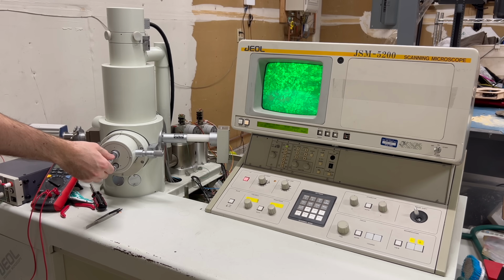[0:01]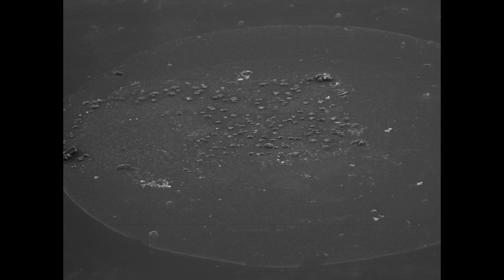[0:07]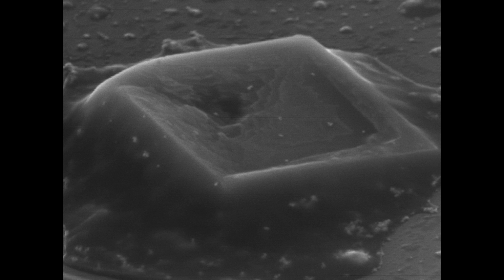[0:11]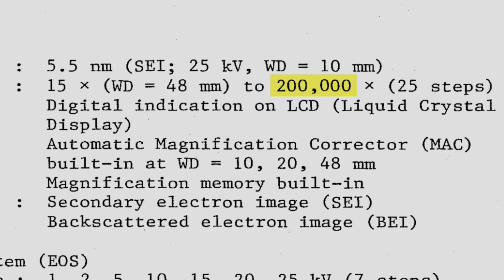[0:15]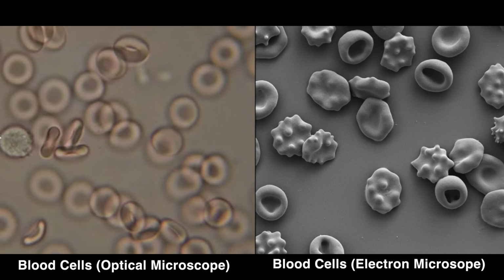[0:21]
In my previous video, I repaired an old electron microscope and produced some really cool images. However, if we want to justify having a SEM, then it really needs to outperform an optical microscope. When this machine was new, it could magnify up to 200,000 times and resolve details down to 5 nanometers, about 100 times better than the best optical microscopes.
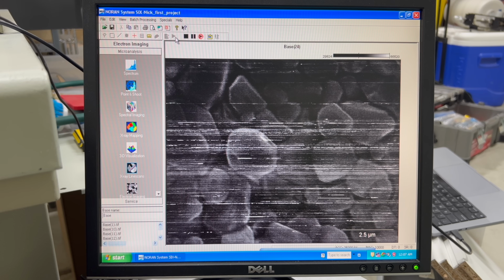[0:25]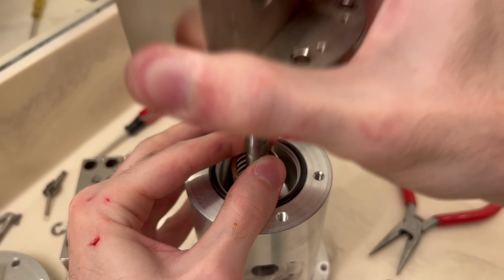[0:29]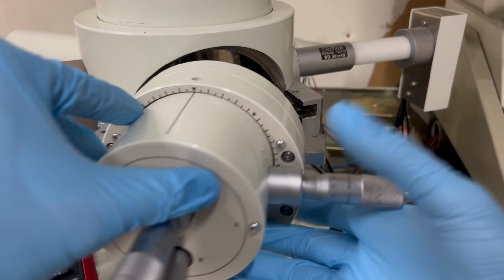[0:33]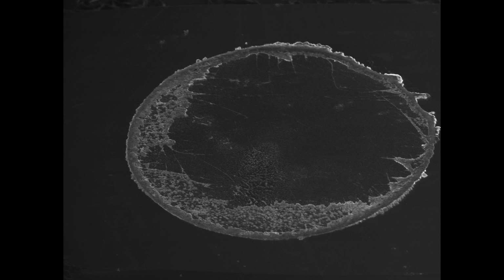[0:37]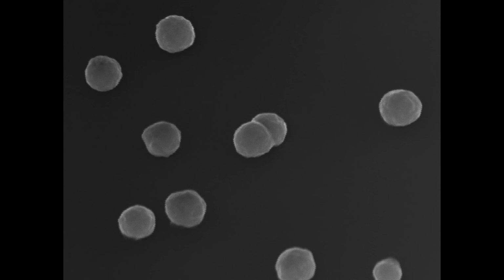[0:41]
However, like any delicate machine, performance degrades without proper maintenance, and this SEM hasn't had a tune-up in over a decade. The first step in that process is having the correct tools for the job. Today, I'll be building the most important tool for the task: a gold nanoparticle resolution test target.
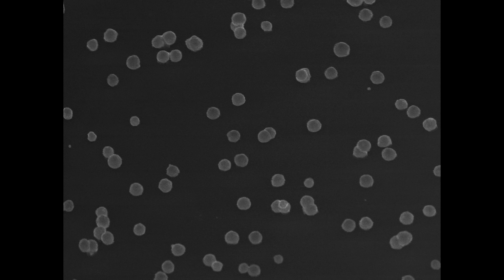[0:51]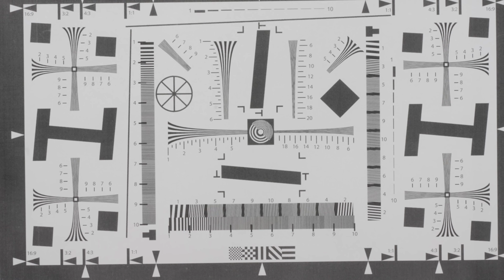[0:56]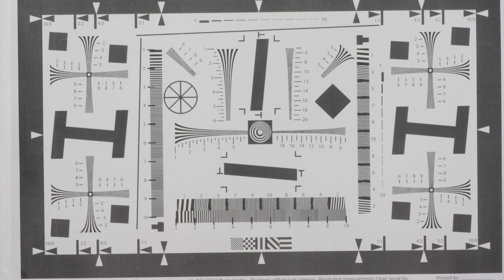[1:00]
Okay, so what is a gold nanoparticle resolution target, and why do we need one for the SEM? Well, simply put, a resolution target is anything you can use to test the maximum resolving power of an imaging system. For cameras, we use something like this.
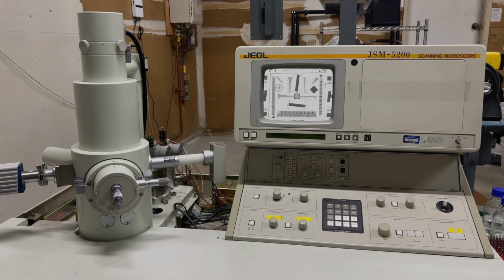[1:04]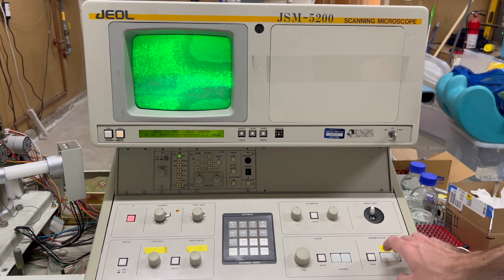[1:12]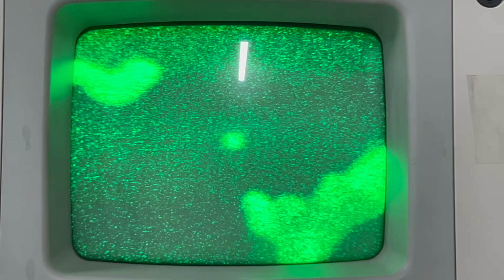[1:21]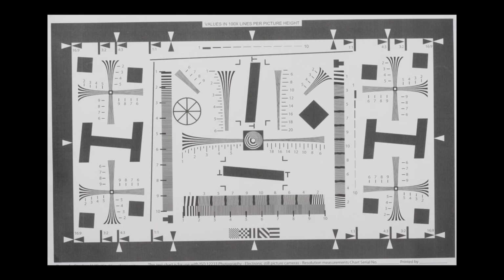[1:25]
What we need is a similar test pattern for the SEM. This will allow us to determine the exact resolution of the microscope to see if it's performing up to its rated specs. It will also allow us to compare its performance before and after any tweaks or repairs. Lastly, it will allow us to calibrate the microscope, but I'll go into a little more detail about that in a moment.
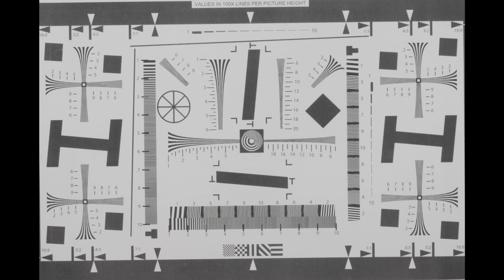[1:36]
Okay, so how do we take this test pattern and shrink it down small enough so that it's useful in an electron microscope? Well, we can't, but not for the reason you might think. The main issue is contrast.
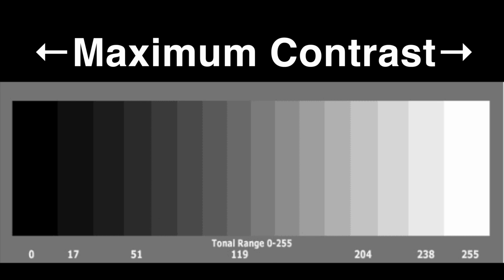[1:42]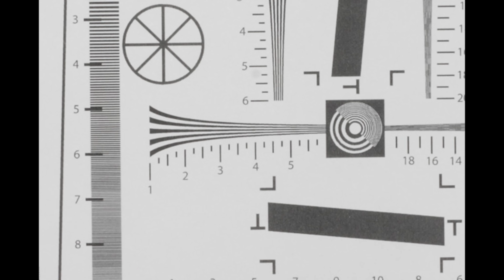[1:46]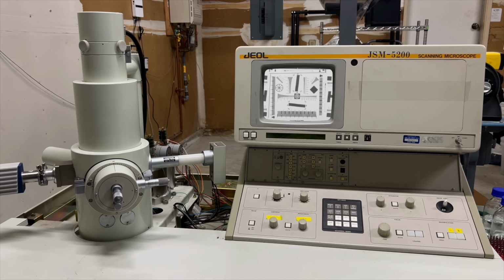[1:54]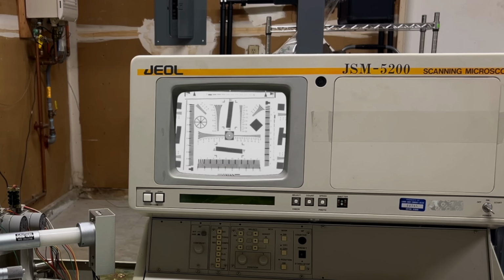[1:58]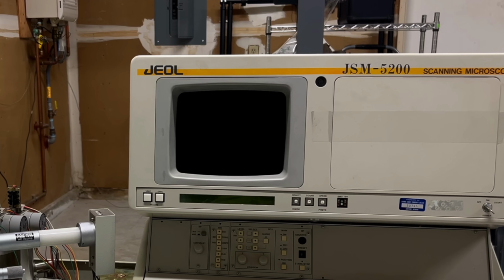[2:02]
You see, we chose black and white bars in our camera test because black and white are the two colors with the highest contrast in an optical system. If we, say, chose gray and a lighter gray, then it would be much harder to see the lines, and this would affect our ability to run the test accurately. The problem is, an electron microscope isn't an optical system. It's not using light to make the image, so black and white bars won't show up at all.
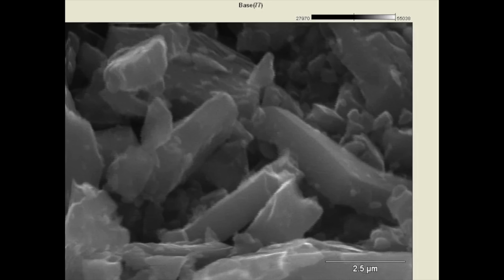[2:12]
In an electron microscope, contrast primarily comes from one of two places. The first is topography. This is a sample of carbon powder. The individual flakes and grains are visible in detail because the number of electrons picked up by the detector depends heavily on surface topography. The second source of contrast is material density.
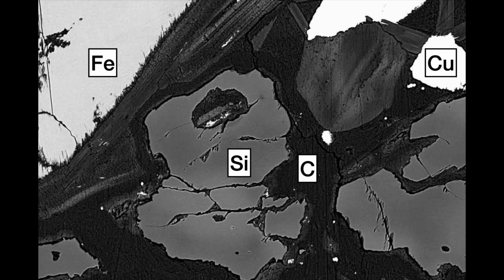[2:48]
Here is a sample of material that has been cut and polished smooth, so there is zero surface topography. This sample actually contains several different materials, and the details visible in this image are due almost entirely to the difference in density between those regions. Generally, regions consisting of small atoms, such as carbon or silicon, appear dark, and regions consisting of larger atoms, like iron or copper, appear brighter.
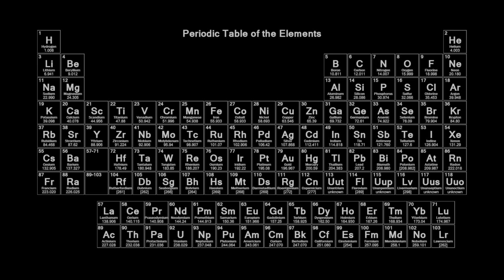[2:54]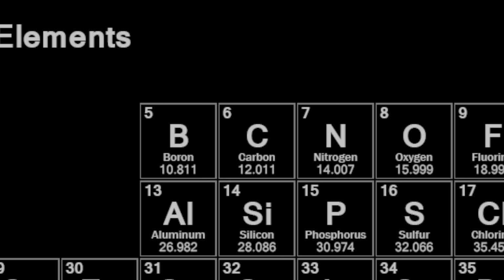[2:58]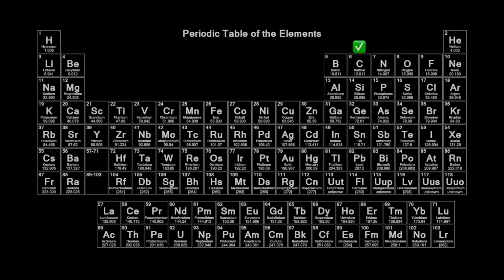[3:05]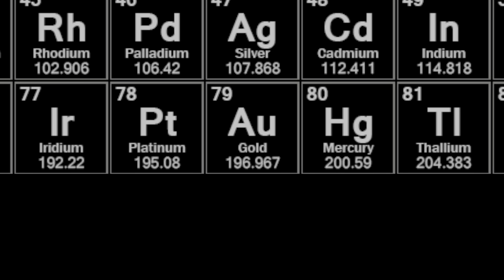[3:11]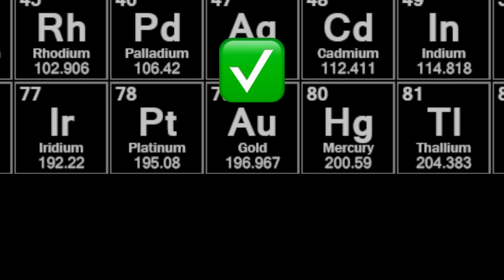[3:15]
This means that if we want to maximize the contrast in our resolution target, we want to choose two materials that are as far away as possible on the periodic table. For this reason, it's common to use carbon, element 6, as the low-density portion of our image. For the high-density element, we need to choose something that isn't radioactive, so everything above lead is out. Gold is non-toxic and extremely chemically stable, so gold is an excellent choice for this task.
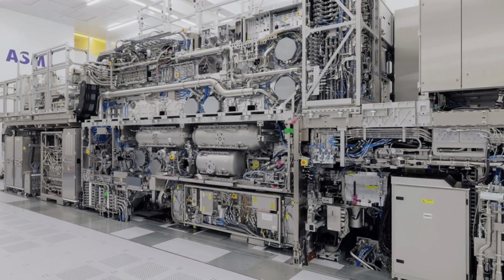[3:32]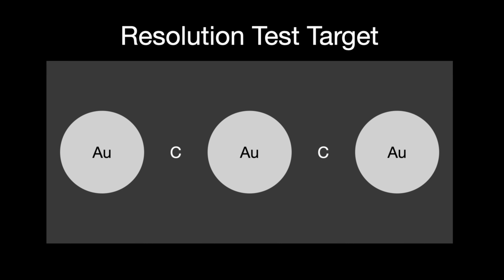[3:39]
Okay, so ideally we want to make our test target with alternating gold and carbon regions. Now, lines would be fine, but remember, we're doing this for a scanning electron microscope, so any features we make have to be tiny. And unfortunately, my multi-million-dollar EUV lithography machine is in the shop right now. Fortunately for us, spheres can actually accomplish the same task.
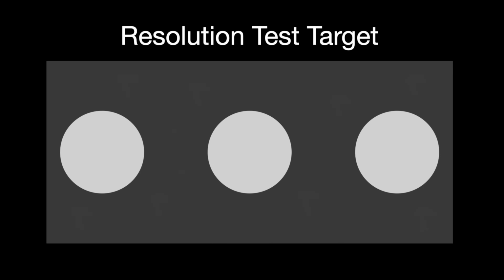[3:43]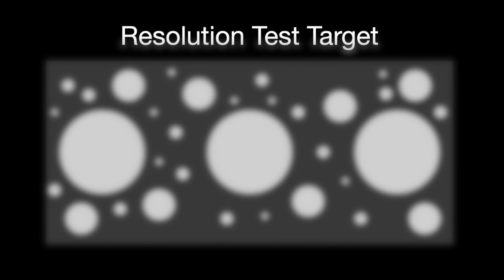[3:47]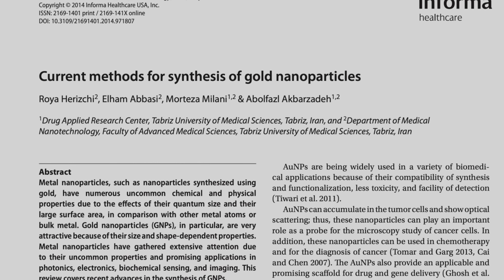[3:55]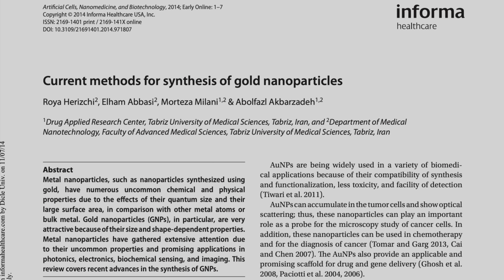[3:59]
Ideally, we'd make spheres in a broad range of sizes. That way, all we need to do is find the smallest spheres that are still in focus, and that gives us a repeatable measurement for the ultimate resolution of our microscope. And conveniently enough, nano-sized gold spheres can actually be made using relatively simple chemistry. The spherical shape also has an added benefit. It allows us to calibrate the microscope.
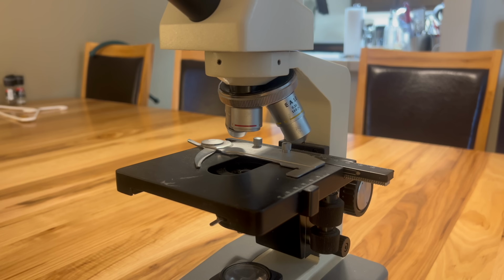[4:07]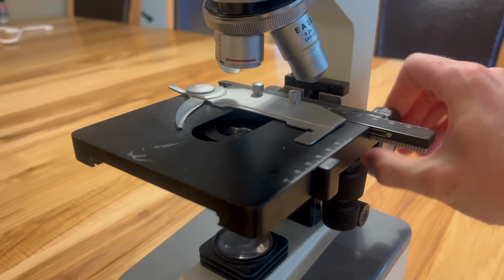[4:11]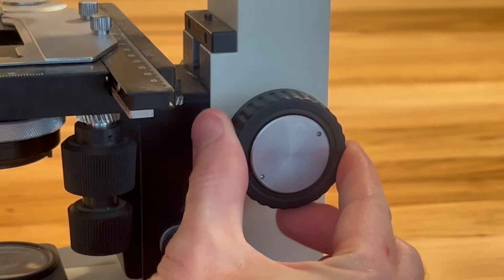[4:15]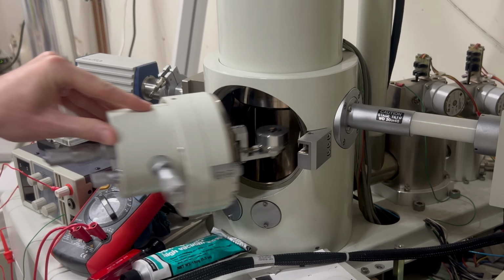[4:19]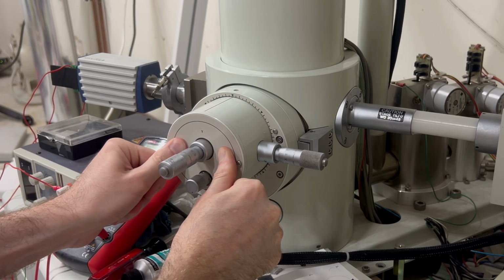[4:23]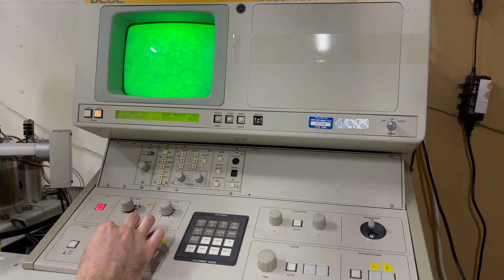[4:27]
Let's talk about that. In an optical microscope, you bring the image into focus by adjusting the distance between the objective lens and the specimen. This requires turning only one knob. By contrast, on an electron microscope, image sharpness is dependent on proper calibration of the electron beam. And unfortunately, calibrating the electron beam is a complicated process, requiring many different adjustments.
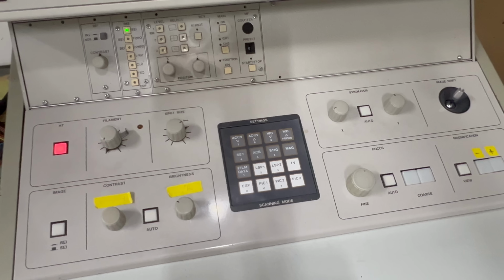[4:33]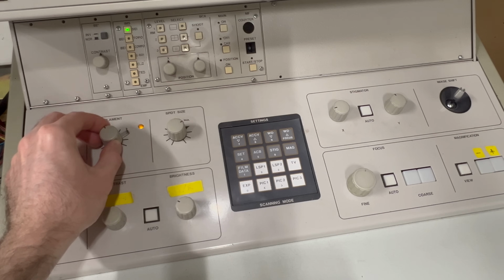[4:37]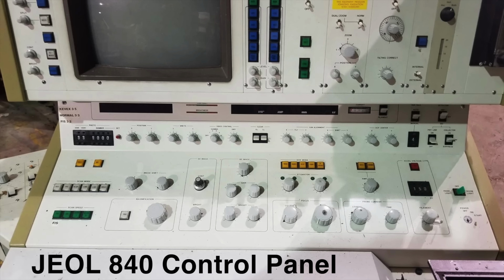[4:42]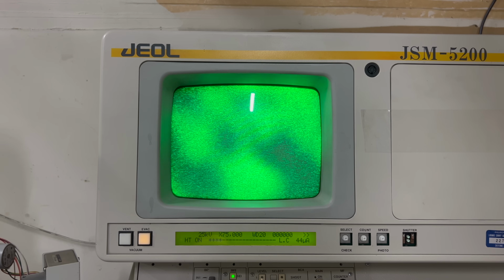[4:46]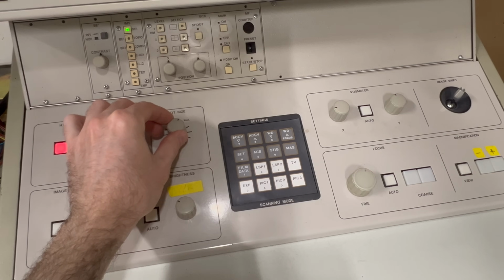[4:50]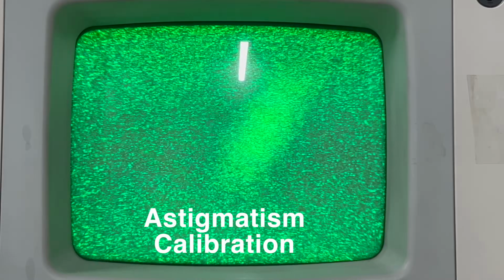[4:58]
You can see on the control panel how many different knobs there are to adjust the electron beam. And believe it or not, this SEM is actually an entry-level model, lacking some of the controls that exist on high-end electron microscopes. So when using an SEM, if your image is out of focus, it can be hard to determine exactly which knob to turn to fix it, especially when your sample is visually complex. This is where the gold nanoparticles come in handy.
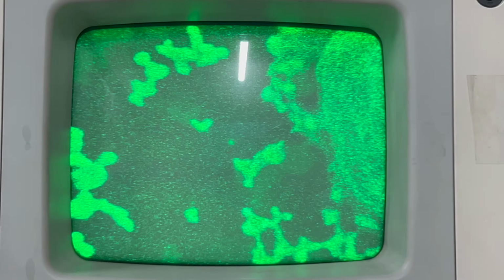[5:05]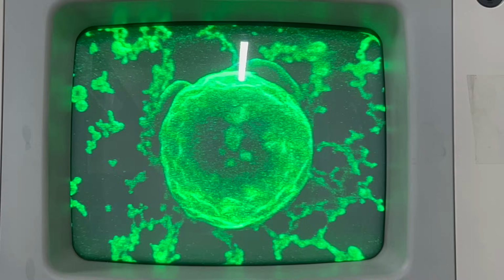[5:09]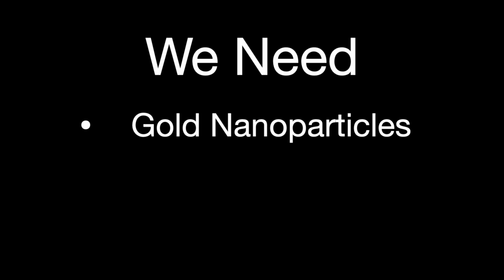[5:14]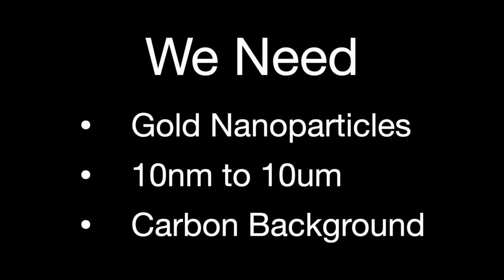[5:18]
Their simple geometry makes it very easy to calibrate the electron beam, at which point you can simply move over to your complex specimen knowing that your beam is properly adjusted. Okay, so we've established exactly what we want. We want gold nanoparticles of different sizes on a carbon background. So how do we get that?
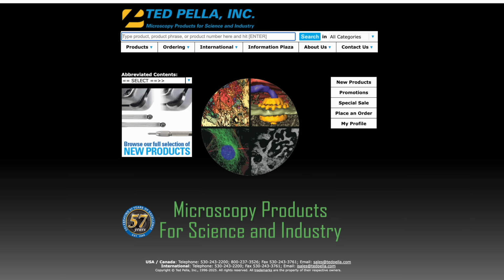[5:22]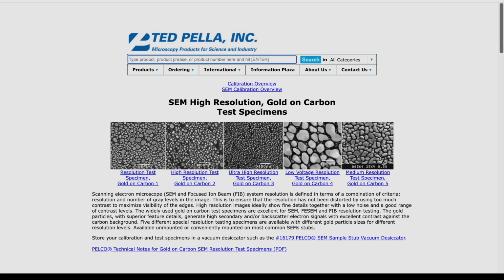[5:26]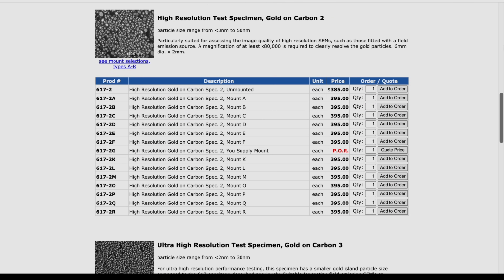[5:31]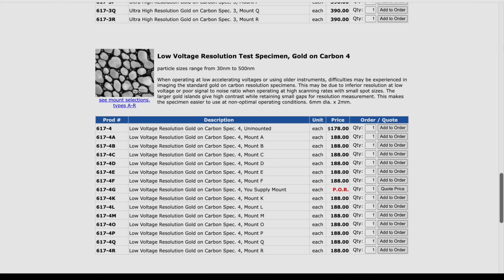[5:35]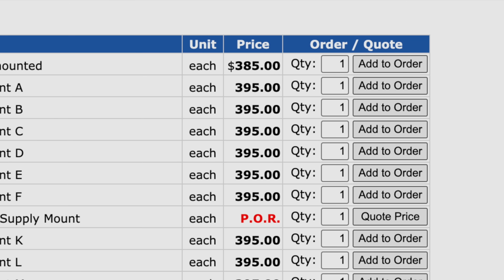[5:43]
Well, you can just buy them. Ted Pella, a supplier of electron microscope accessories, happens to sell exactly what we want. So the obvious question is, why don't I just buy one? Well, there are two reasons I want to make them myself. First off, as you might expect, these calibration targets are very expensive. Ted Pella charges over $200 each, which is nothing for a well-funded lab, but not exactly hobbyist-friendly pricing.
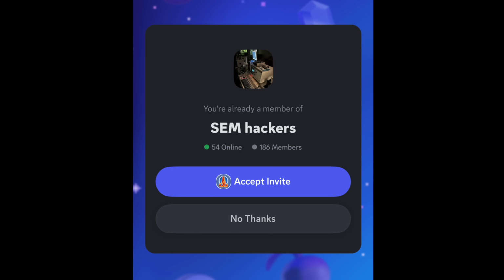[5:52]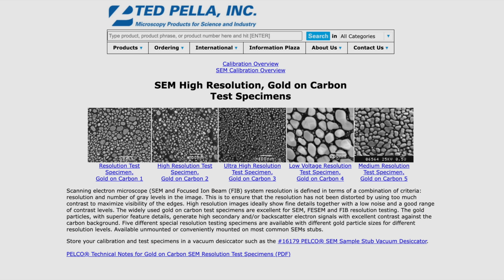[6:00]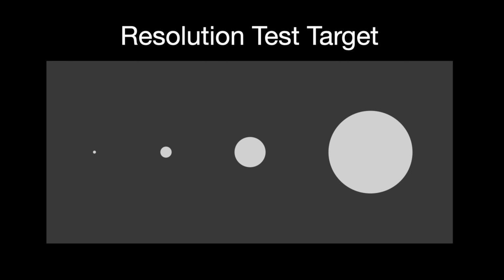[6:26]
In addition, I happen to know a bunch of other hobbyist SEM owners now, and so if I can figure out how to make these, then I can save each of them $200 as well. The other reason I want to make them myself is the issue of size. You see, modern electron microscopes can resolve details down to 1 nanometer. For a hobbyist restoring an old electron microscope, however, it's not uncommon to start off with a very poor resolution in the micrometer range or worse. A lab-grade calibration target might simply be too small to be useful. So I want to make a calibration target that covers a much larger range, specifically suitable for electron microscope hobbyists.
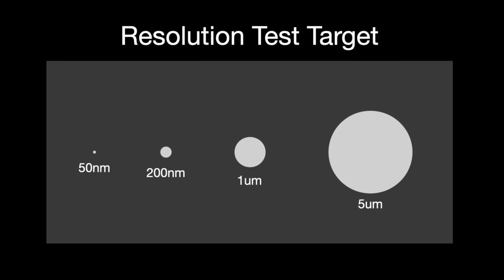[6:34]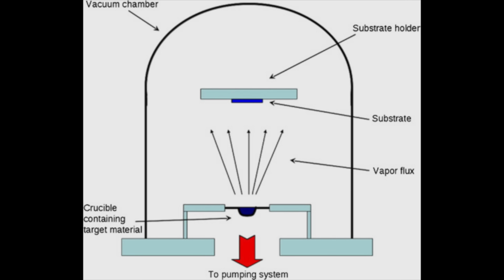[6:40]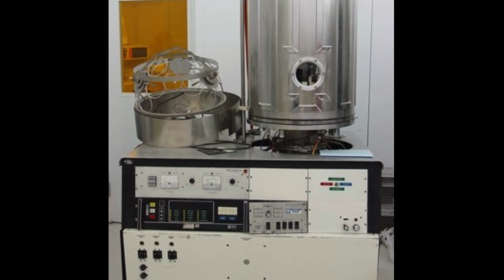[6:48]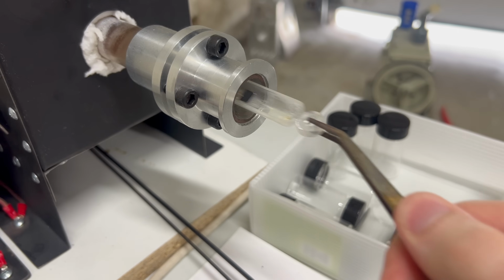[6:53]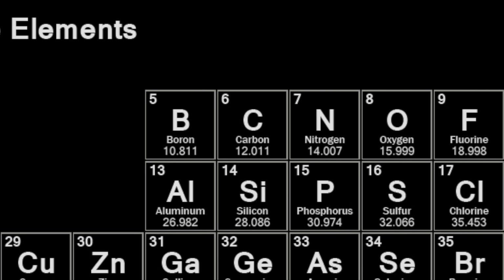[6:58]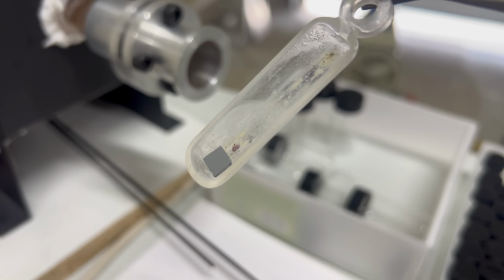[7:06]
Okay, so how do we actually make this? Let's start with the background first. Now, the correct way to do this would be to deposit carbon onto a silicon substrate using a thermal evaporator. However, my thermal evaporator is in the shop right now. What if I just use silicon instead? These silicon chips I have in abundance were polished until they're almost atomically smooth. Now, silicon isn't carbon, but it's still low enough on the periodic table that I think it will serve as a suitable background. So let's go ahead and use that for now while we focus on the much more interesting problem of creating the gold nanoparticles.
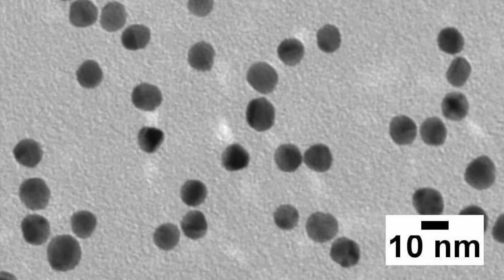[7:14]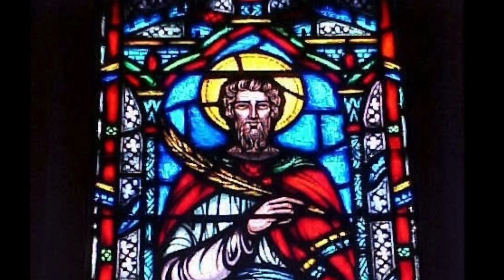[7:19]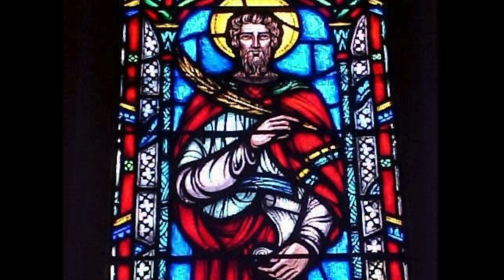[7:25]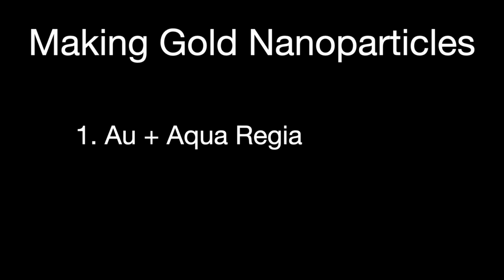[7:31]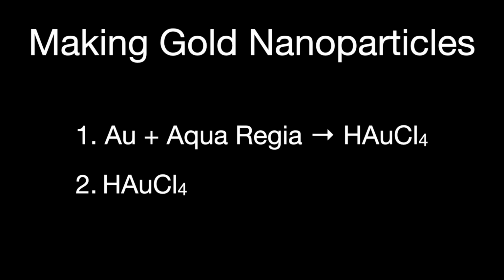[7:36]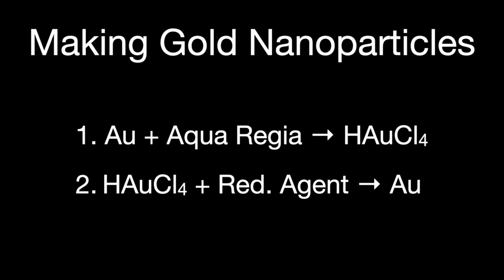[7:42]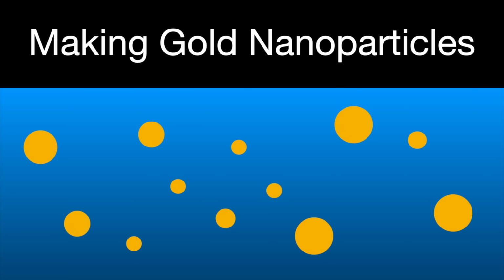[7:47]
Now, with a name like gold nanoparticles, you may think that making them is a relatively new invention. But actually, gold nanoparticles have been used to make red stained glass since at least the Middle Ages or earlier. The basic recipe is simple. You start by dissolving the gold in an acid called aqua regia. This converts the gold into something called chloroauric acid. Then you add another chemical, called a reducing agent, which converts the chloroauric acid back to elemental gold. This conversion causes the dissolved gold to fall out of solution so quickly that it doesn't have time to form large particles. The particle size is usually between about 10 and 100 nanometers.
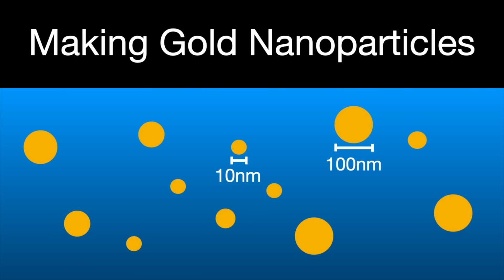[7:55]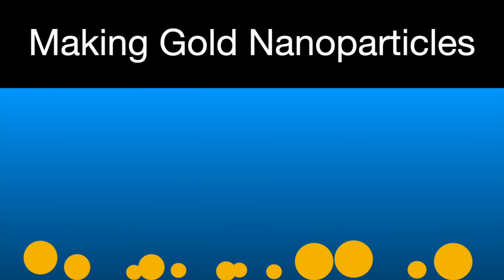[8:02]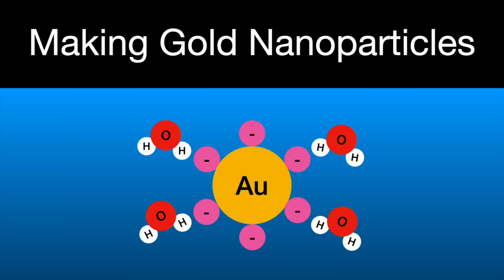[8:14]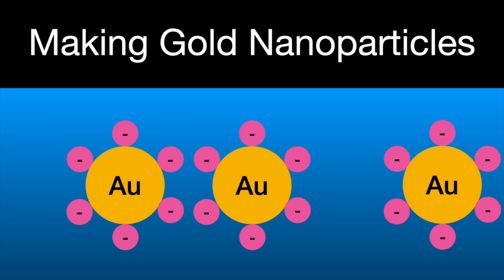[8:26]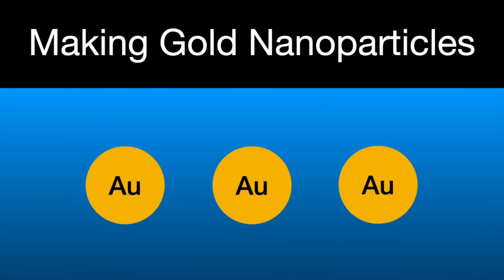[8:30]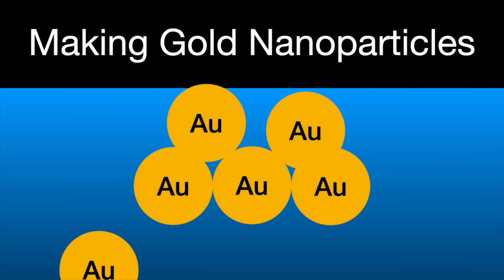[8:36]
There's just one hang-up though. Gold particles aren't soluble in water, so over time they'll just settle to the bottom of the container. Fortunately, there's a clever trick we can pull to keep the gold dispersed in solution. If we bind the gold particles to an ion that is itself soluble, then the ion will be attracted to the water, and the gold will be forced to come along too. So even though the gold itself isn't soluble, the gold and ion combo is. What's even cooler is that because the ions are electrically charged, the gold nanoparticles in solution will repel each other and stay separated. Without the ions, the gold particles would eventually run into each other, and interatomic forces would cause them to stick together and quickly become a massive clump. With the ions, though, the gold particles will stay separated basically indefinitely.
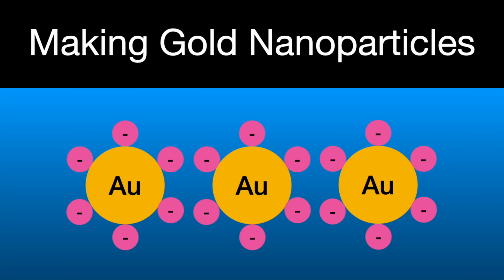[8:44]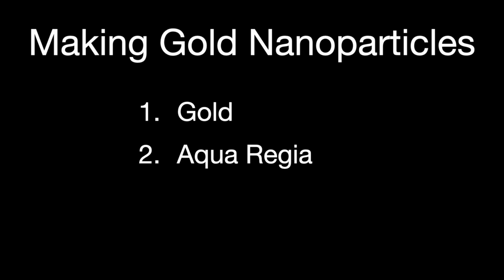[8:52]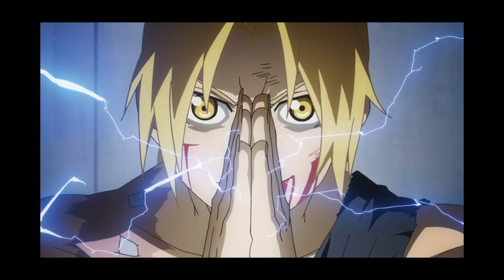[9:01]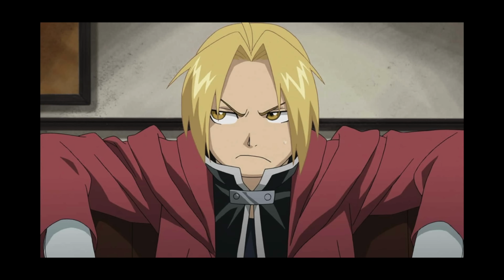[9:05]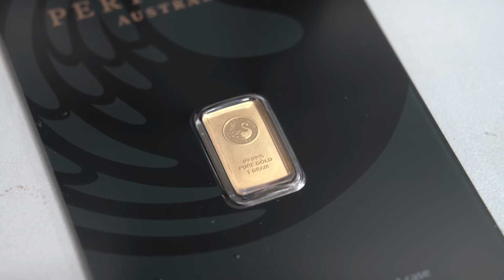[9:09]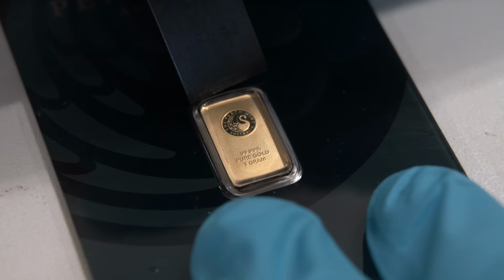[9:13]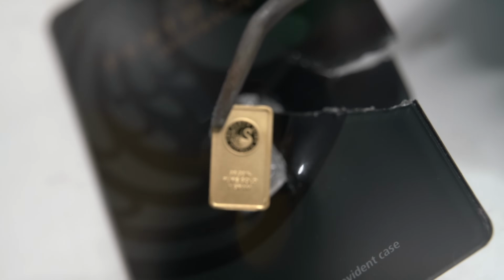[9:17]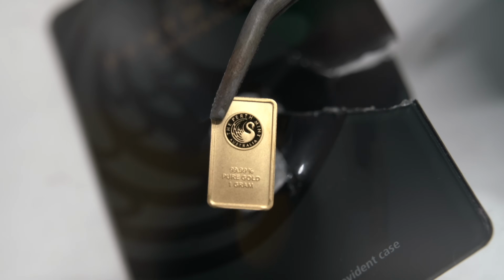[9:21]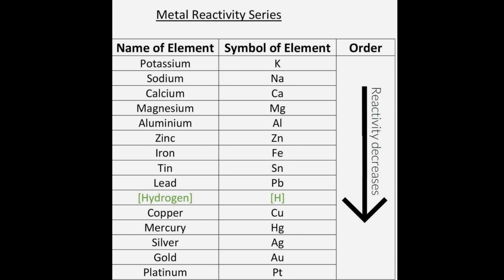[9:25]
Pretty cool. Okay, so I think, finally, we've laid out everything we need to make this work. We need gold, aqua regia to dissolve the gold, a reducing agent to precipitate the gold, and an appropriate ion to bind to the gold. So let's start with the gold. Unfortunately, my powers of alchemy are not sufficient to make gold from nothing, so I had to purchase some. This is a 1 gram bar of gold I bought from the local coin dealer. Current prices are around $100 a gram, which is a lot, but this amount of gold is enough to make thousands and thousands of these test targets, so I'm not really upset at the price, assuming I don't accidentally lose it somehow.
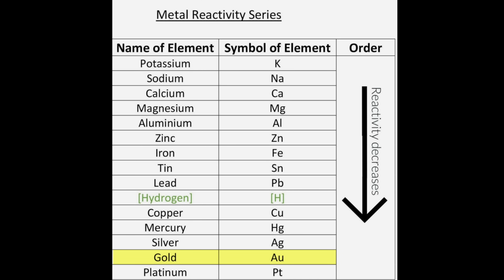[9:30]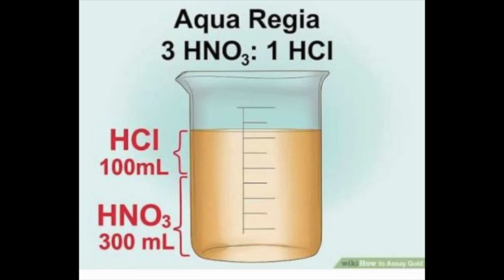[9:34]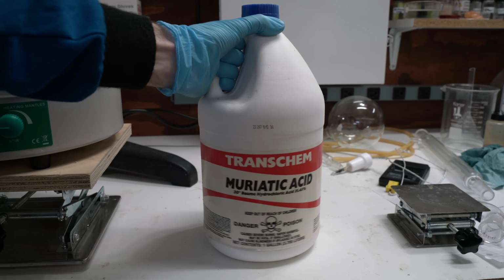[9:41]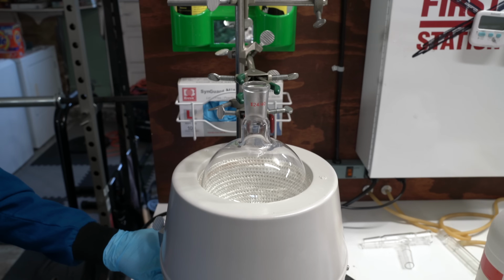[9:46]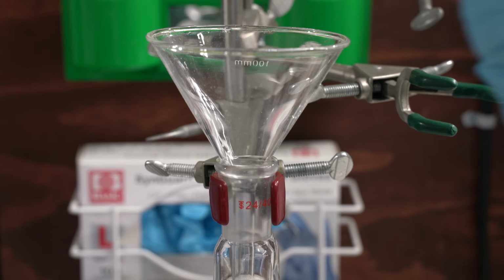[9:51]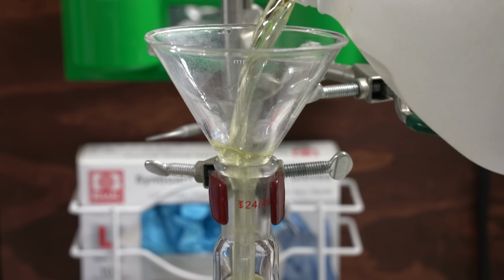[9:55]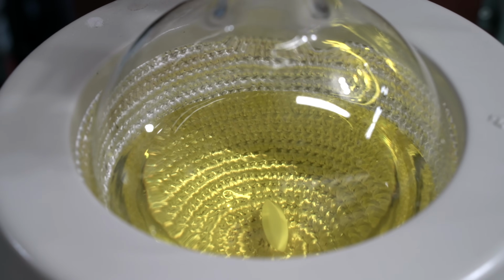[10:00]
Okay, now let's move on to the aqua regia. Gold is a chemically inert material, and it's resistant to almost all acids. However, a combination of hydrochloric and nitric acid is strong enough to dissolve even noble metals like gold. Hydrochloric acid is relatively common and is sold as a pH reducer for pools, so that's where I decided to start. However, I immediately realized a problem. The hydrochloric acid I bought was yellow, indicating it has other stuff in it. I have no idea what they added, but whatever it is likely to interfere with our reaction, so it has to go.
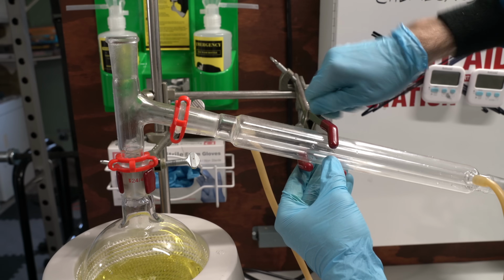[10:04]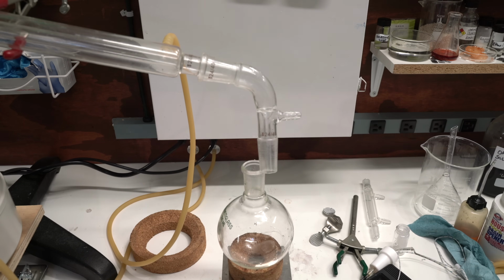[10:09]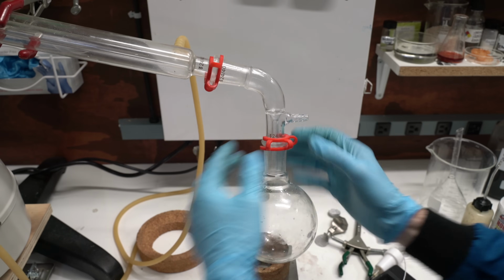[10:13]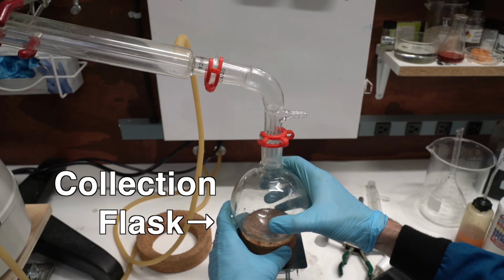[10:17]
The easiest way to purify hydrochloric acid is to distill it, so I set up an apparatus to do just that. When heated, the hydrochloric acid should boil out and leave the impurities behind. The purified vapors will be condensed and collected in a second vessel.
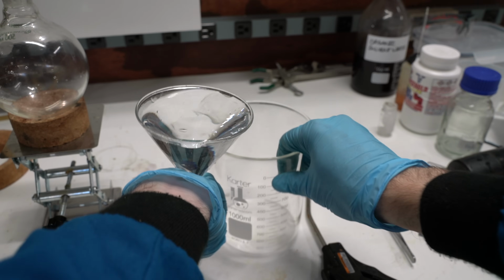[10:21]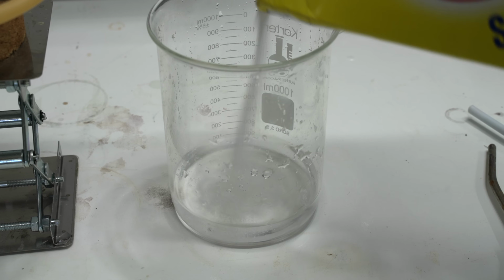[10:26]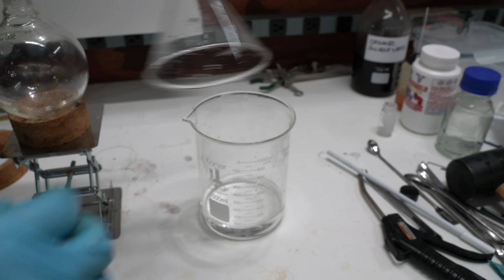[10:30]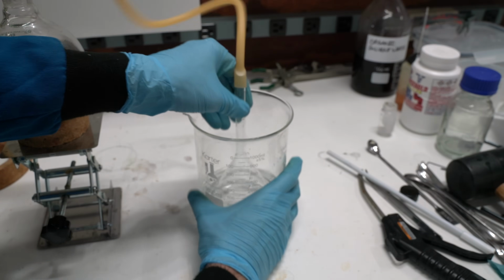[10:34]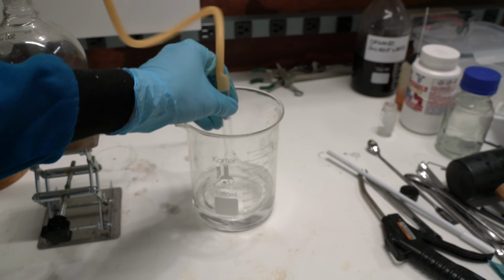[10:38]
Now, HCl vapors are highly corrosive, so it's important to direct any excess gases into a trap. I'm using an inverted funnel in a beaker of water mixed with sodium carbonate for this purpose. Any excess HCl vapor will end up dissolving in this water and reacting with the sodium carbonate, producing sodium chloride, table salt, and carbon dioxide.
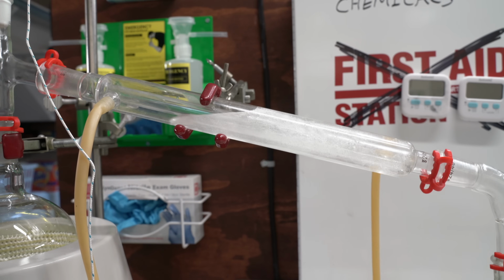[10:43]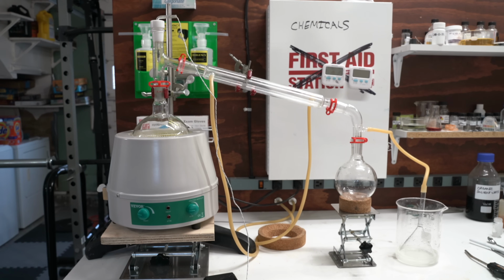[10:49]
The trap is good, but I'm still using good ventilation and wearing a full face mask because acid vapors are no joke and there's always a chance something will go wrong. And, spoiler alert, something did indeed go wrong.
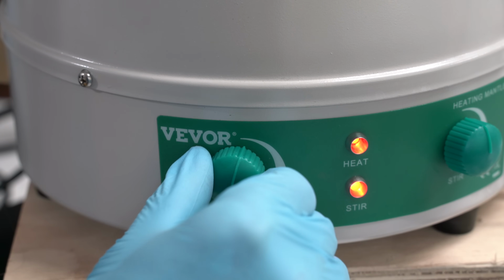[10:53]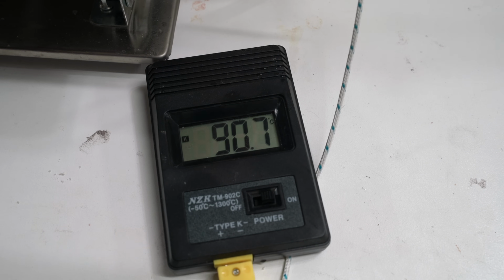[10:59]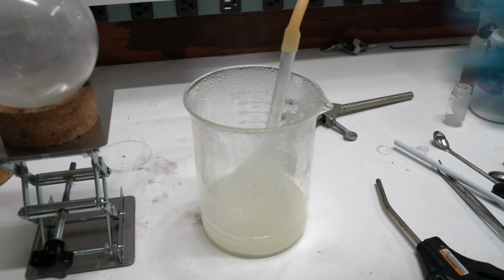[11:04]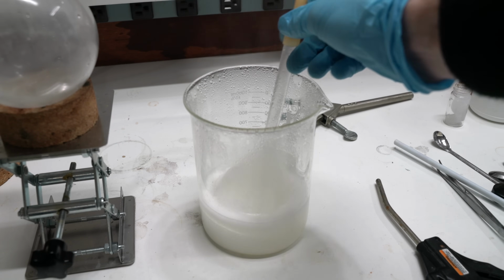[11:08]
I turned on the hot plate and waited for the acid to come up to its boiling temperature of 108 degrees C. However, before it even got to 100 C, it started producing a ton of hydrogen chloride gas, which quickly began to overwhelm the sodium carbonate trap and leak out into my lab. What in the world is going on?
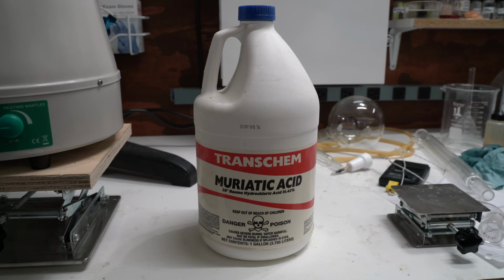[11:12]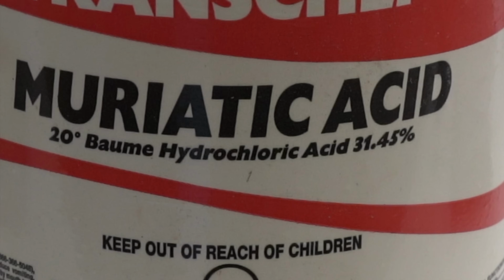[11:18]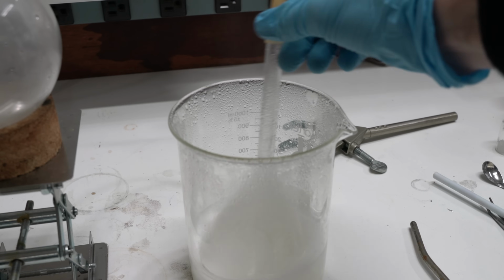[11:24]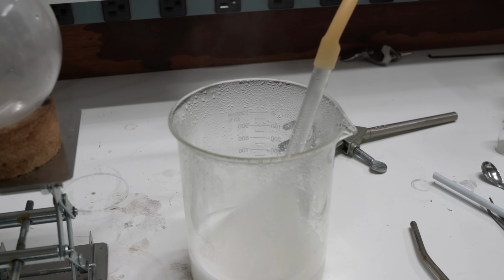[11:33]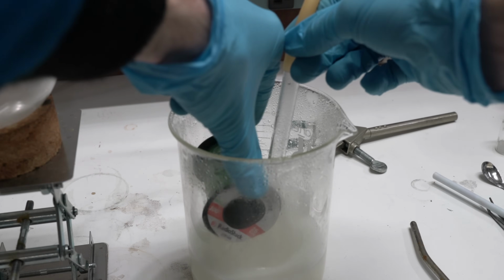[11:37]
Well, here's the mistake. You see the container here? I misread this as 20% HCl, when in reality, it was 32%. Oops. This is the problem. You see, hydrochloric acid at 30% concentration will fume violently and release hydrogen chloride gas when heated. At 20% concentration, that fuming is minimal. Had I realized my HCl was 30%, I would have diluted it down to 20% straight away.
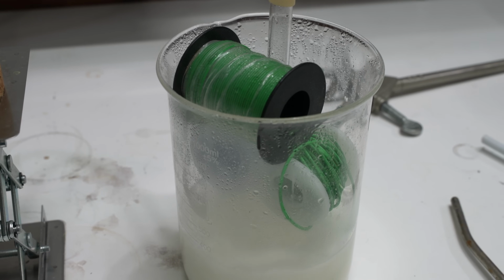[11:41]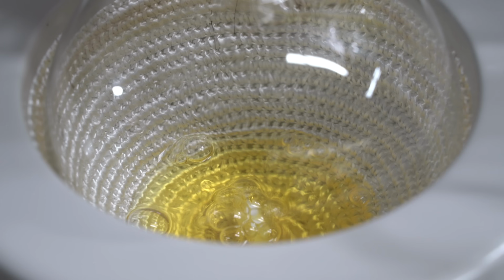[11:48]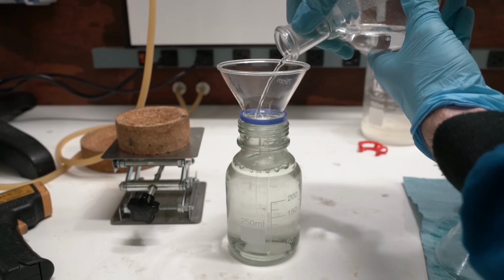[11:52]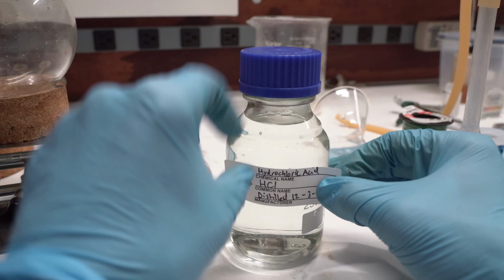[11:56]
Oh well. Instead, I just ended up venting the extra gas into my lab. Not ideal, but hey, this is why you always wear PPE, I guess. Finally, the distillation finished, and I had about 200 milliliters of squeaky clean 20% hydrochloric acid ready to go. Alright, one acid down, one to go.
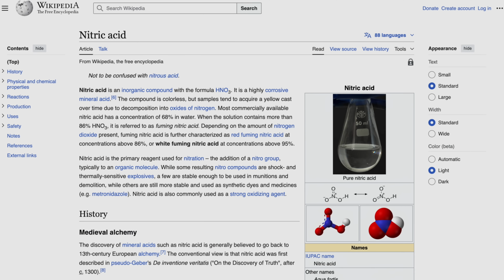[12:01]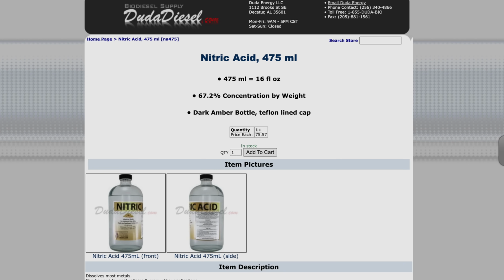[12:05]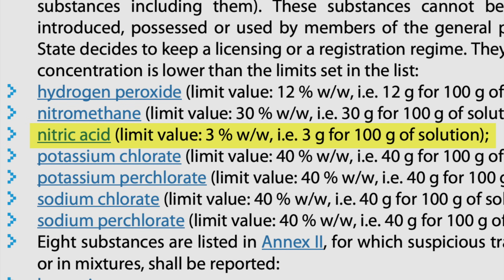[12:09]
Unlike hydrochloric acid, nitric acid is a bit tougher to purchase as an amateur. It definitely is available on some sites, but buying it is pretty sketchy and expensive. Fortunately, it's easy to make. The most common route to make nitric acid is to heat a mixture of an acid, a nitrate salt, and water. Most commonly, it's sulfuric acid and sodium nitrate.
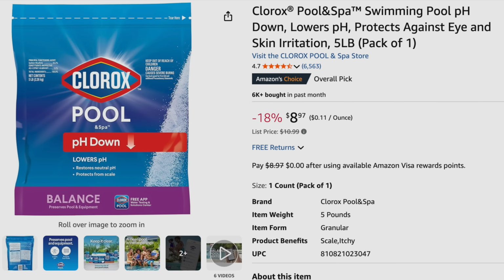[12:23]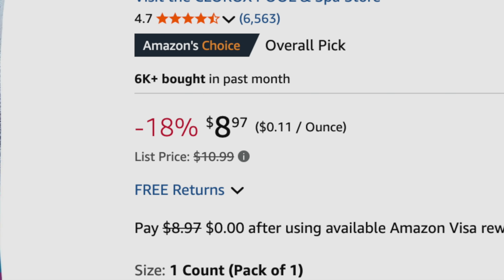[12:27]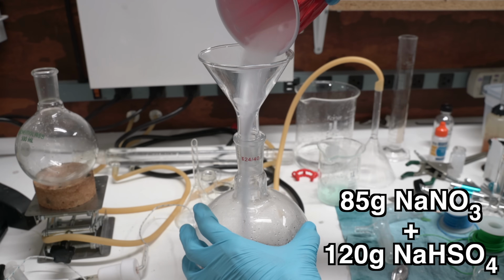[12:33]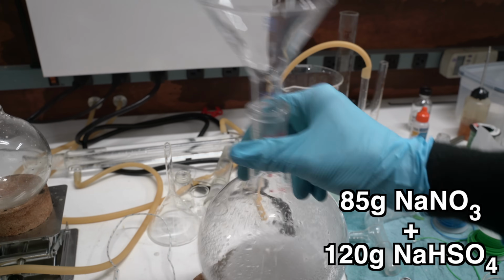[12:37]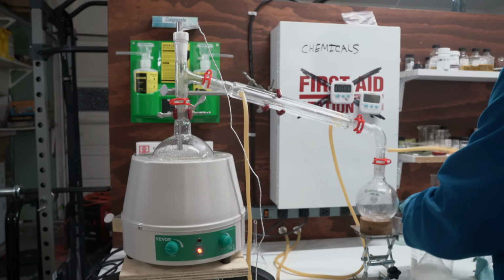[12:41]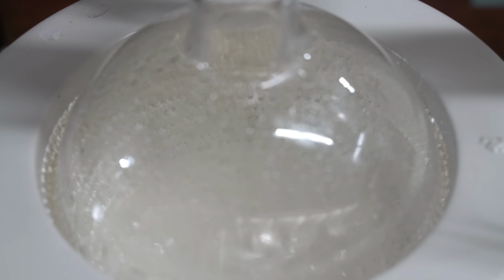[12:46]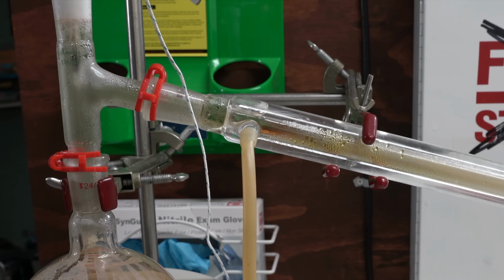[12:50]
You can also swap out the sulfuric acid for sodium bisulfate, which is cheaper and more easily accessible in some places. I decided to try the bisulfate route this time. I mixed stoichiometric amounts of sodium bisulfate and sodium nitrate in my flask with just enough water to fully dissolve the solids, and then set up for another distillation. I turned on the hot plate and waited for the reaction to start. As the bisulfate and nitrate react, they form nitric acid, which boils out and condenses into the receiving flask.
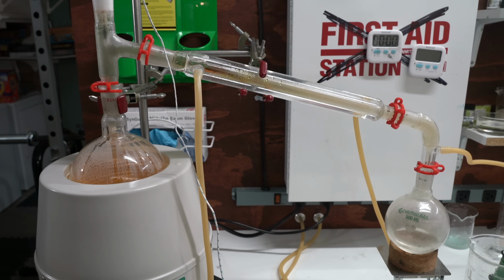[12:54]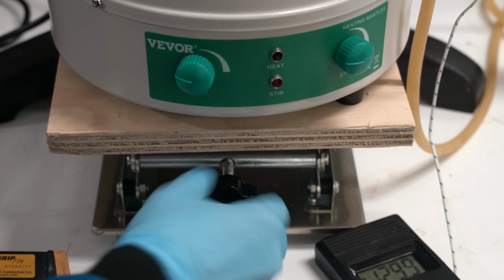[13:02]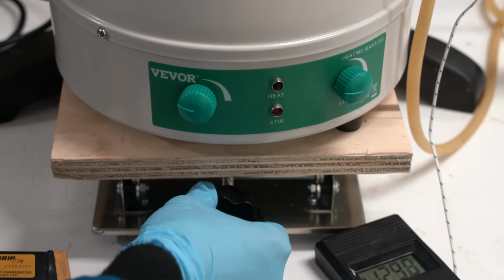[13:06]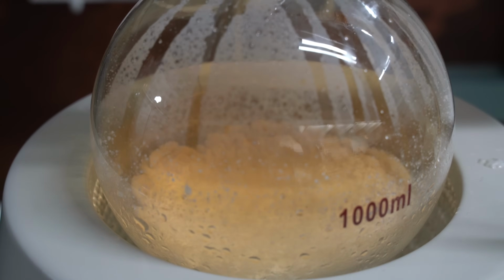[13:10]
Now, I've tried the sulfuric acid method before, and it's pretty straightforward to get good results. The bisulfate method, however, is a bit annoying, because both the bisulfate and the nitrate salts are solids, and the product of the reaction, the sodium sulfate, is also a solid, so you just end up with a lot of solids needing a lot of water to keep everything dissolved.
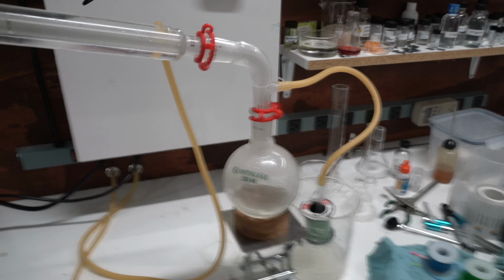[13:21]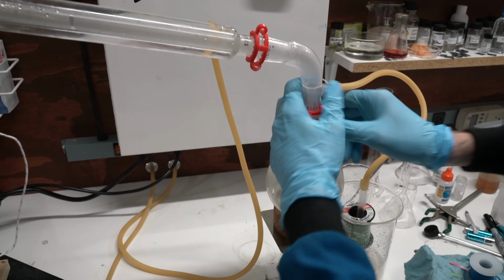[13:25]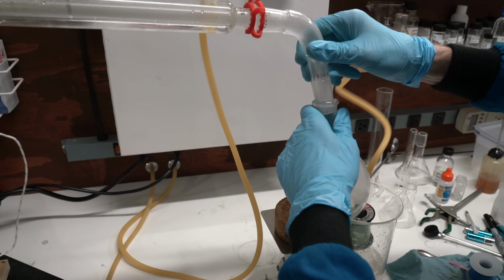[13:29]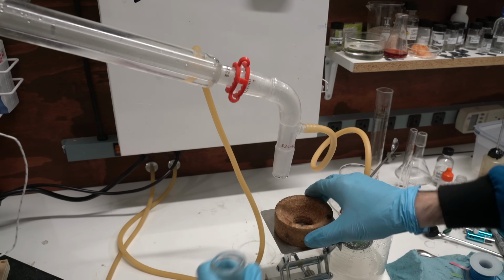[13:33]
I ended up struggling to complete this distillation because I lost too much liquid and ended up with a solid mass of material. Now, I could have heated this up to about 300 C, at which point the salts would have melted together, allowing the reaction to continue. However, I didn't want to do this because I had a stir bar in the flask, and they cannot survive that temperature. I just decided to cut my losses since I didn't need all that much nitric acid anyway.
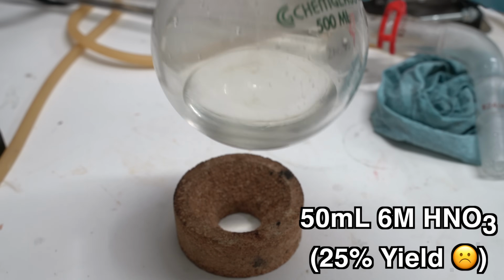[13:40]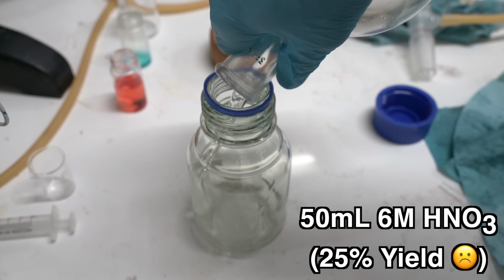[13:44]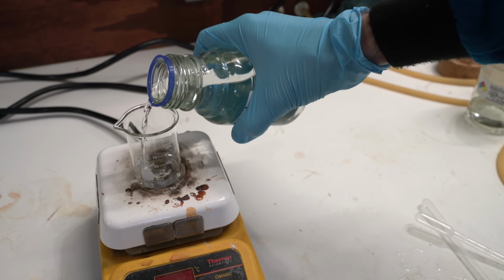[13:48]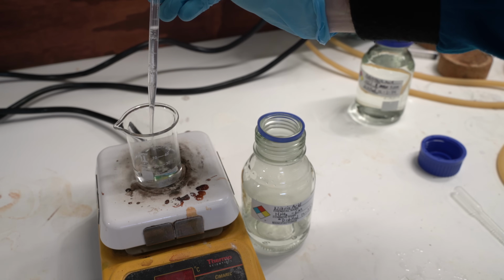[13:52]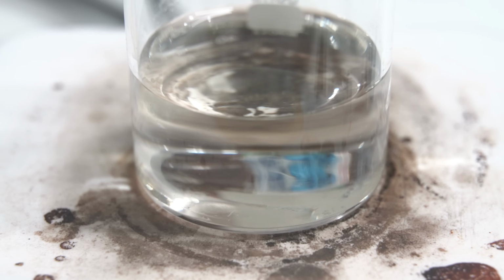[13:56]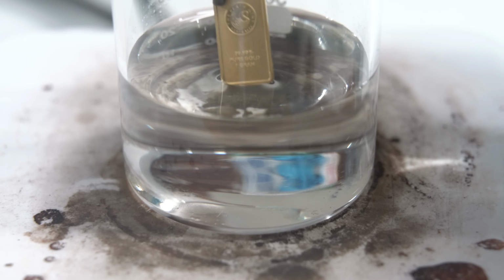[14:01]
So here is my product, about 50 milliliters of nitric acid. Not fantastic, but certainly good enough for what I need. I mixed the hydrochloric and nitric acid in roughly a 3-to-1 ratio to produce a weak aqua regia solution. I then heated the solution to about 80 degrees Celsius. Now for the moment of truth. Let's see if this gold bar will dissolve.
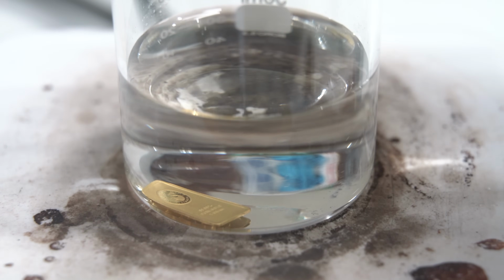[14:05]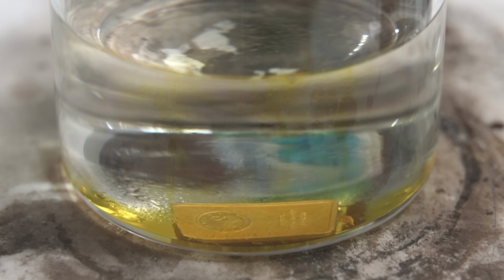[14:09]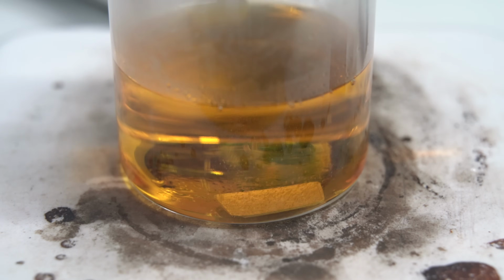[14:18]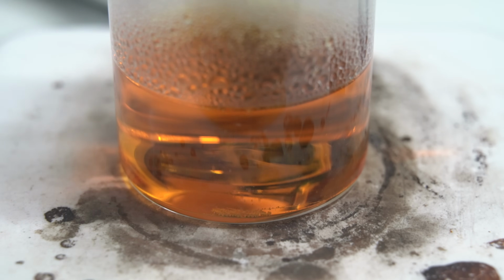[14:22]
At first, I didn't see any change, but after a couple of minutes, I noticed a distinct yellow haze in the water. After a few more minutes, I could clearly see the bar dissolving. It's so cool to see one of the most stable elements react like this. That aqua regia stuff sure is strong. I waited another half hour as the bar eventually fully dissolved into the acid.
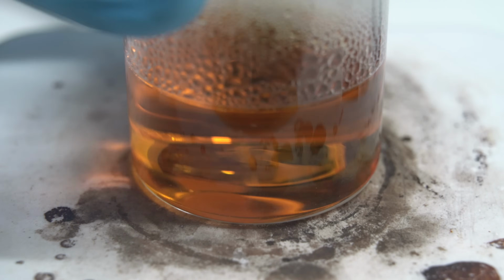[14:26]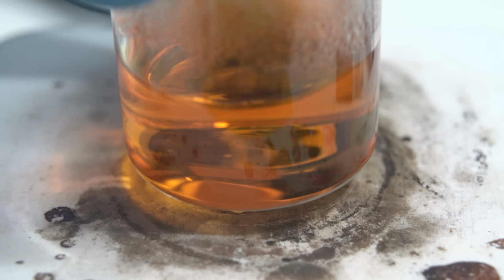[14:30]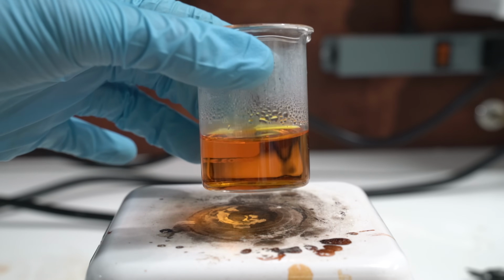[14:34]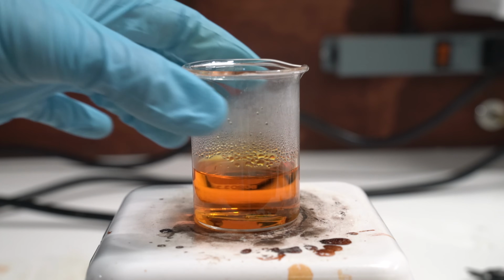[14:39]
Now we have a solution of chloroauric acid, along with any remaining HCl and nitric acid. We need to remove those to get pure chloroauric acid. Fortunately, this should be easy enough, as we just need to boil off the other acids. I put the beaker on the hot plate and boiled down the solution as quickly as I could.
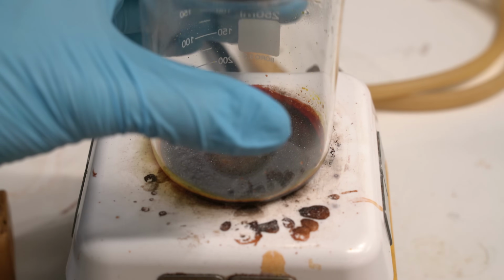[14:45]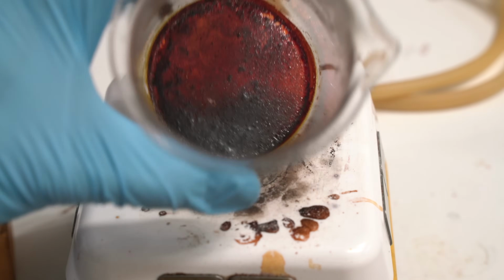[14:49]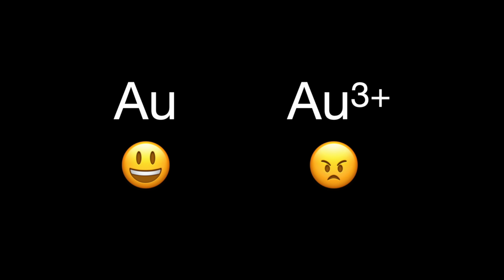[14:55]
Unfortunately, as the solution reached dryness, I noticed some sort of contaminant appeared. What happened? Well, you see, gold really likes being in its elemental form, and doesn't like being an ion. At high temperatures, gold compounds decompose into elemental gold. What must have happened was that as the water ran out, the temperature quickly rose from 100 degrees Celsius up to the decomposition temperature, converting us back into elemental gold.
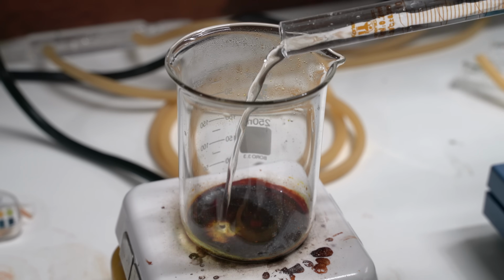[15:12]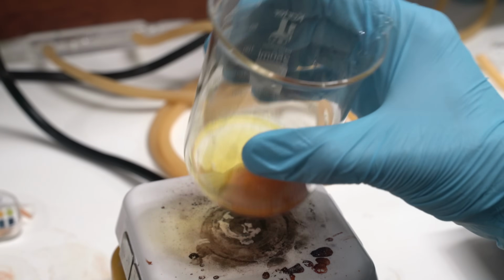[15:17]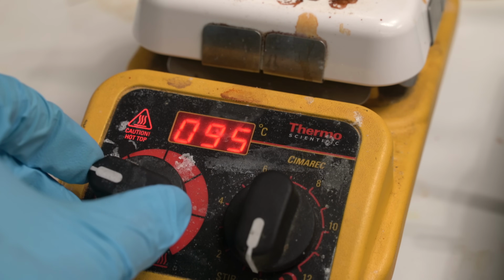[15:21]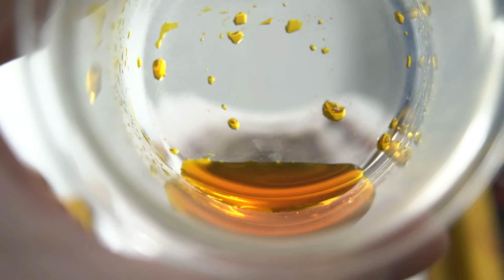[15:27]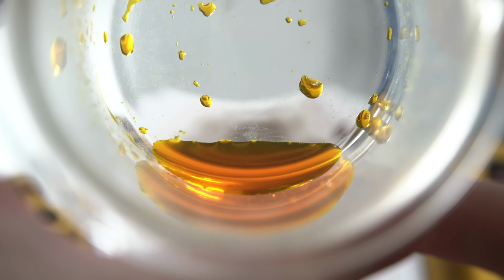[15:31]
If I'm correct, this should be chloroauric acid trihydrate. It has a melting point of 30 degrees Celsius, so as the hot plate cooled down, I waited to see if it would solidify. Sweet. I think we did it.
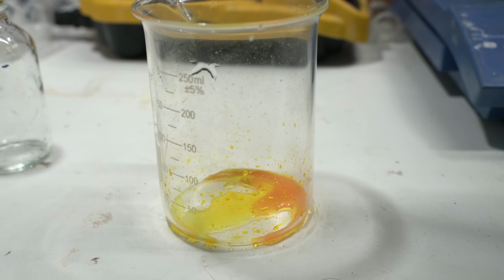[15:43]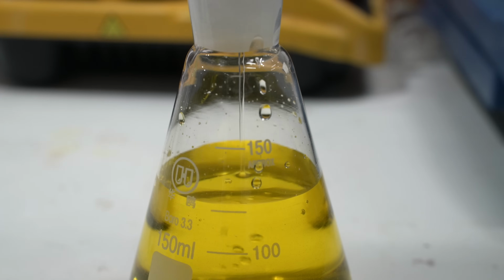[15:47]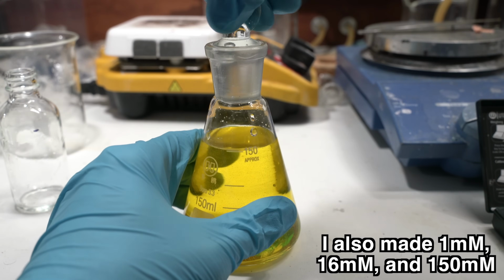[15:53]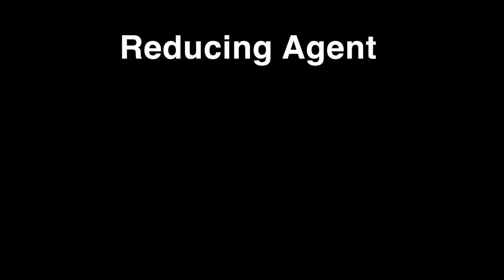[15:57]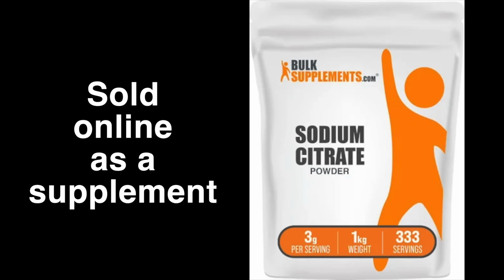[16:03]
Now that I had pure chloroauric acid, I could add distilled water to it and make a solution. I added just enough water to make a 33 millimolar solution. From the papers I read, this solution should be more than sufficient to make nanoparticles. Lastly, we need a reducing agent, and an ion for stabilizing the gold particles. The most common reducing agent for making gold nanoparticles is sodium citrate. The citrate can pull double duty as both the reducing agent and the ion to stabilize the gold particles.
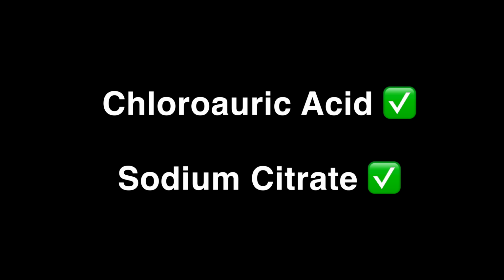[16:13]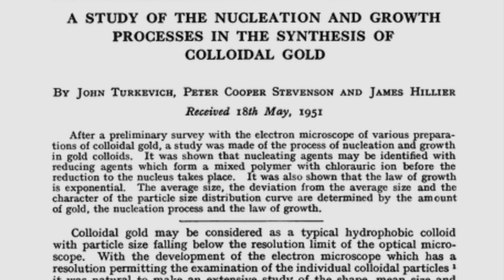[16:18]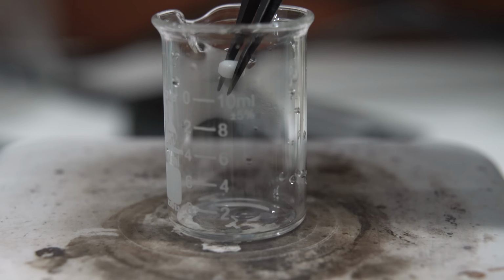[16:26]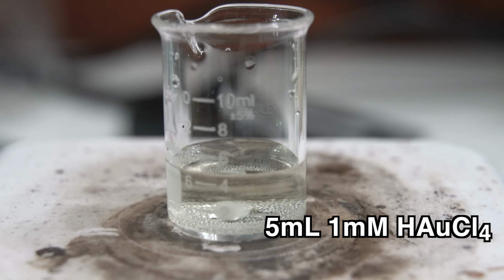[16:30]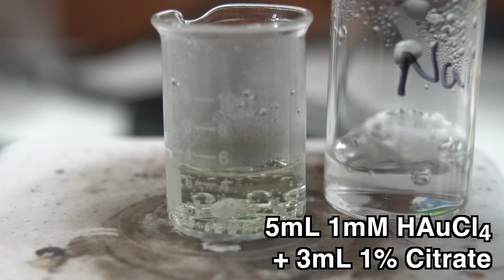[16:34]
Now that we have all the necessary chemicals, let's make some nanoparticles. I'm going to start by following the Turkevich method, named after the scientist who developed an easy and repeatable method for the synthesis of gold nanoparticles. We start by preparing a tiny beaker and a stir bar. We add a very dilute solution of chloroauric acid to the beaker, and we prepare a sodium citrate solution in a second container. Then we bring both solutions to a boil.
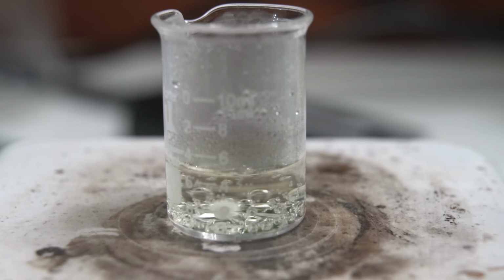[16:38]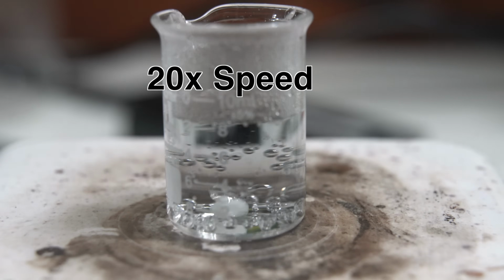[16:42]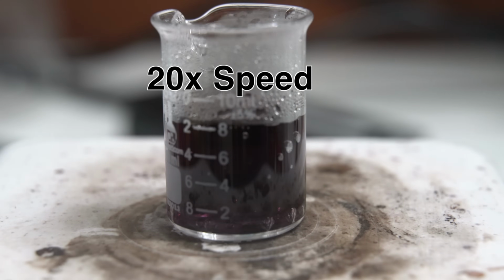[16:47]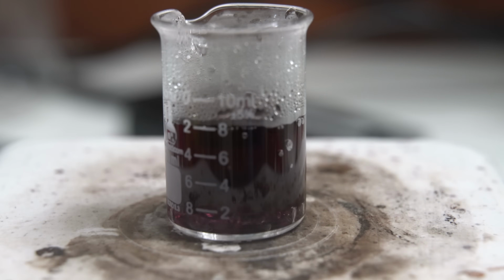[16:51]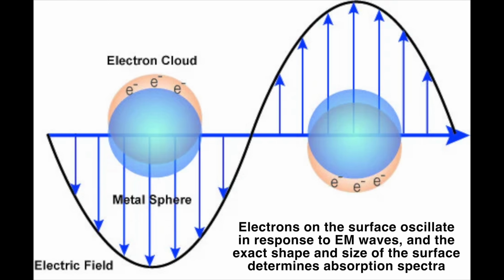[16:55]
We then add the boiling citrate to the chloroauric acid, and we wait. In only a couple of minutes, the solution starts to change from clear all the way to a deep purple or red, indicating that we've produced gold nanoparticles. Now, you may be wondering, why isn't the solution gold colored? Well, the reason for the red color is due to a property called surface plasmon resonance.
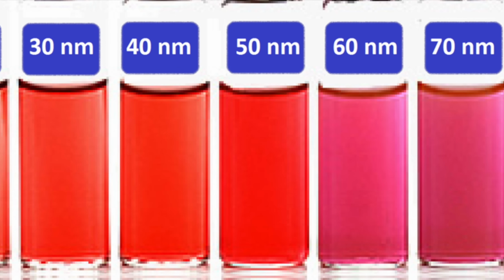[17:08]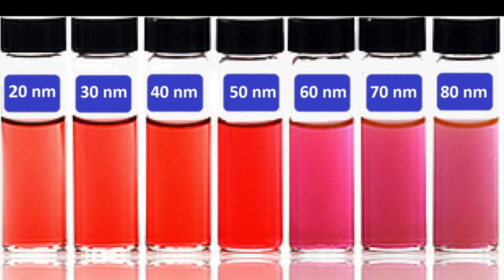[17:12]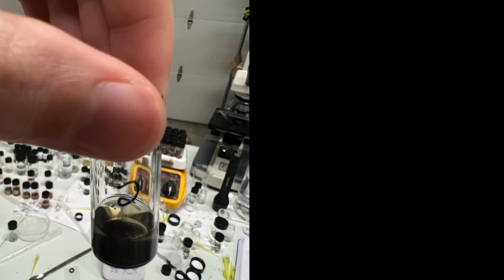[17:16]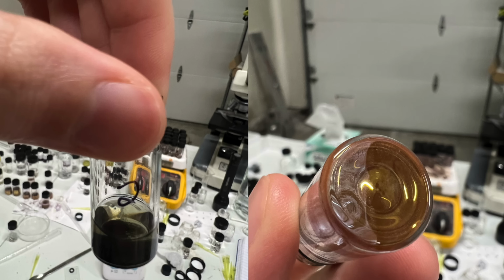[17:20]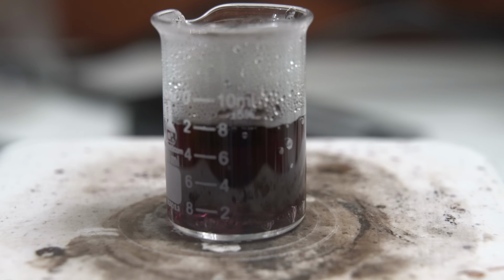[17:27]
Basically, the shape and size of the gold particles cause light of certain wavelengths to be strongly absorbed. You can even use the color to estimate the size of the nanoparticles themselves. This property is only really noticeable when the gold particles are smaller than a couple hundred nanometers. If the particles are larger, then they'll start to appear as black and then shiny gold. Based on the color, it looks like our nanoparticles are probably somewhere between 50 and 100 nanometers in size.
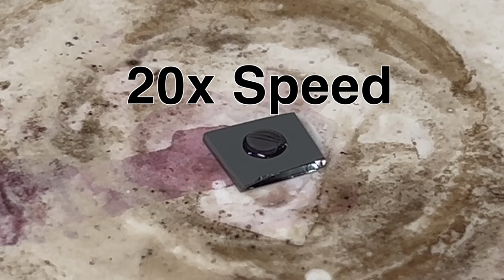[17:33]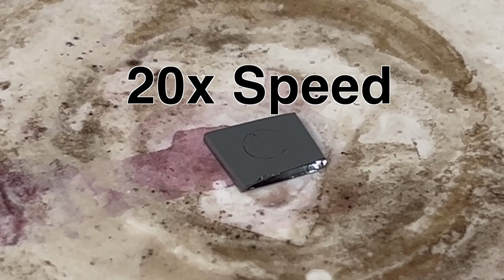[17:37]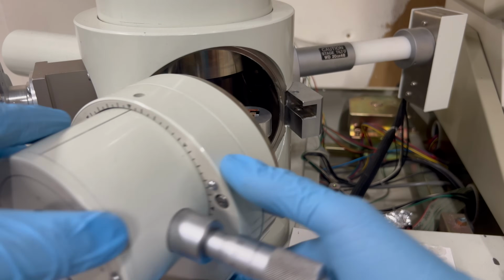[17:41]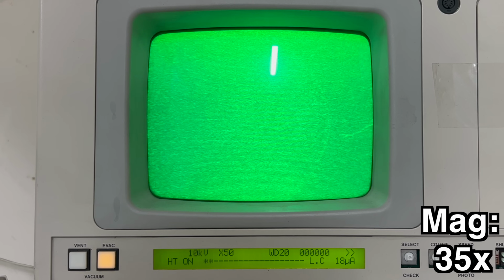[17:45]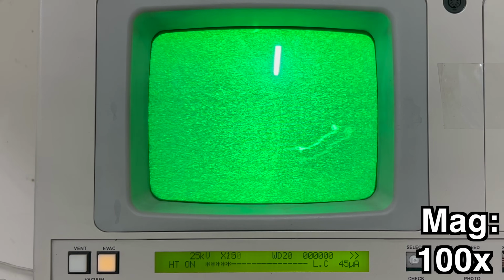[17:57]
I used a micropipette to place a drop of the nanoparticle solution onto a silicon wafer, and then placed it on a hot plate to gently evaporate the liquid, hopefully leaving behind our nanoparticles on the silicon surface. I fired up the scanning electron microscope, and I put the chip inside to get ready for imaging. It's a little difficult to see, but you should be able to spot a circle in the center of the chip where the nanoparticles are. By the way, this drop looks big on the screen, but it's only a couple of millimeters across in real life. Time for a mega zoom.
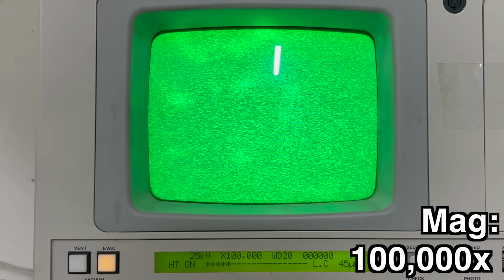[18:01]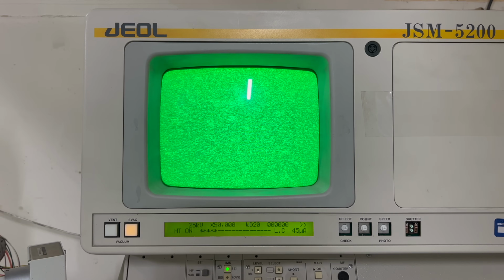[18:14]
Wow, those are tiny. After a lot of fiddling, I was able to just barely see them, but honestly, this isn't great image quality. It's quite likely the microscope is out of calibration. If I want to fix that, I'm going to need to start with bigger nanoparticles and work my way down. So what can we change about our process to make larger particles? Well, we've got several knobs we can turn here.
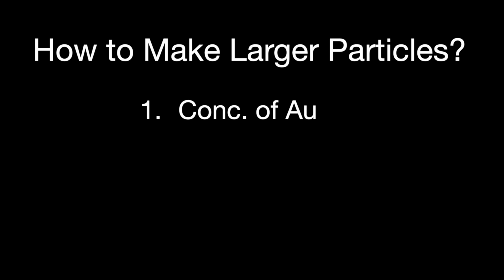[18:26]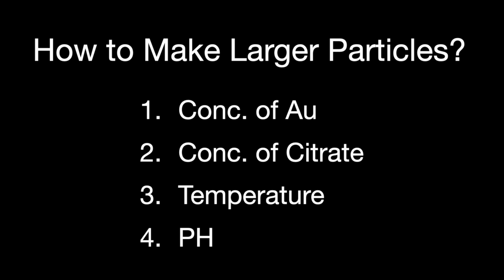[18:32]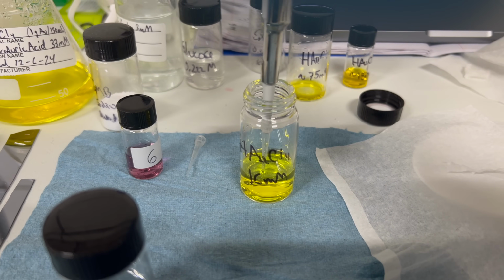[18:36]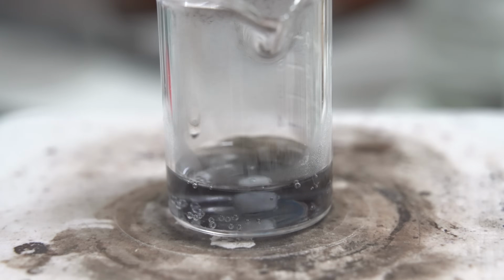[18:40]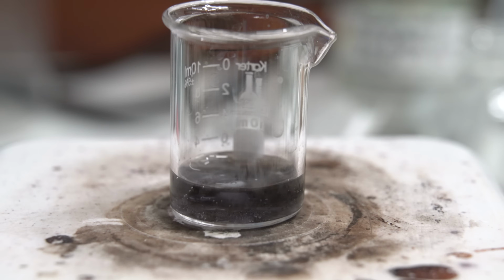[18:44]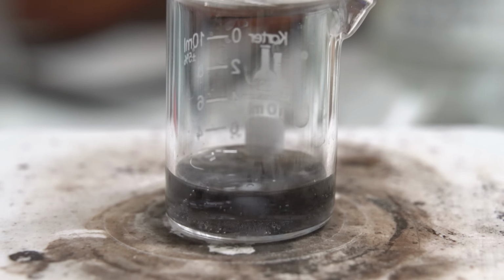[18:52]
We could change the concentration of the gold or the citrate. We could also change the temperature or even the pH of the solutions. I spent quite a while changing one variable at a time to see what kind of an effect it had on the nanoparticle's size. But honestly, I didn't see much of a difference. All of the solutions were pretty colorful, indicating that they had nanoparticles in the sub-200 nanometer size range. I wanted larger particles. What gives?
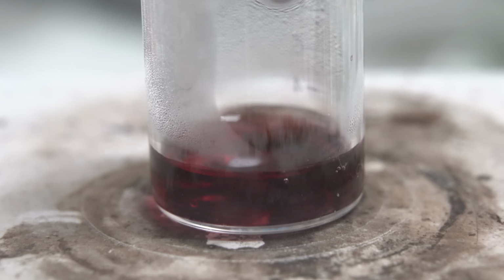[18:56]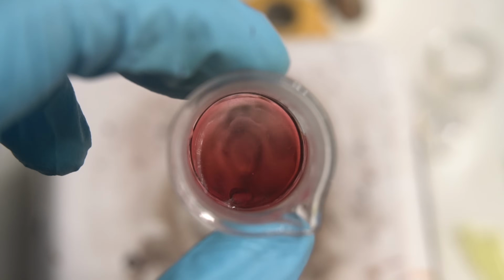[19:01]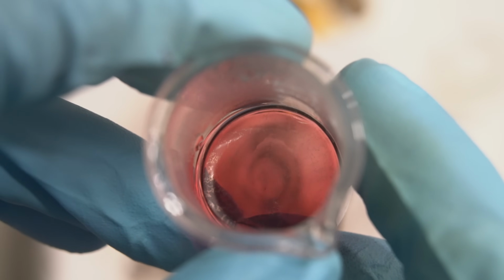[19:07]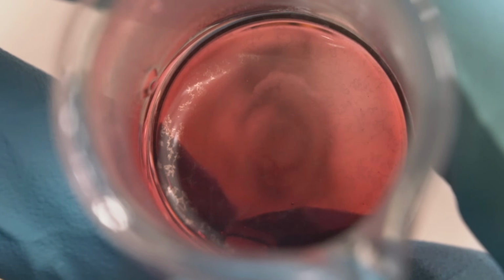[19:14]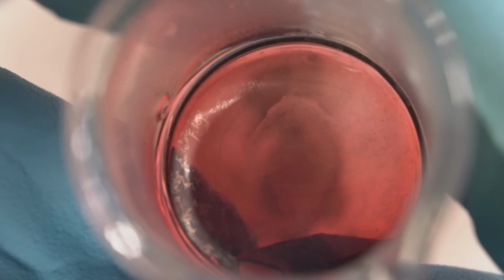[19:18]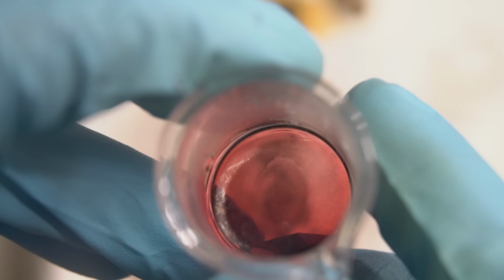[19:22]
I finally realized the problem during one of the runs. You can see from the red color that we must have very small nanoparticles in the solution. However, if you look closely, you can see a gold-colored film on the surface of the liquid. The fact that these particles are gold in color, rather than red, means that they are much larger. So what we have here is a solution that has produced both small and large particles. At first, I was happy to see this. I had finally managed to create larger particles of gold.
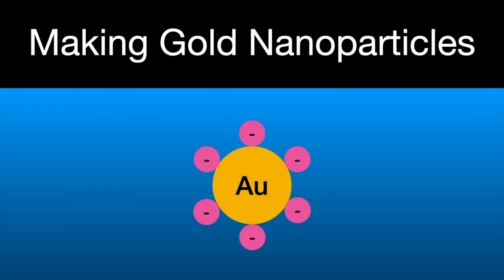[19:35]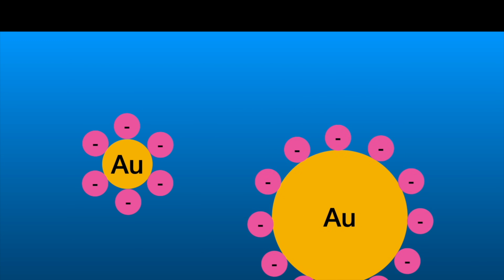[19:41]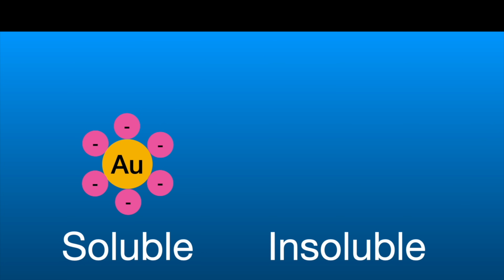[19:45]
However, I quickly realized that, despite this success, I had created a new problem. If you recall, the red nanoparticles in solution are kept separate by the citrate ions. The fact that the larger particles have fallen out of solution means that the stabilizing effect of the citrate ions is no longer sufficient to keep them dispersed.
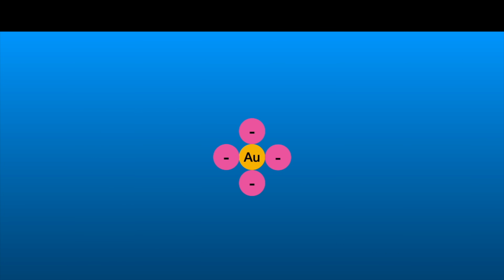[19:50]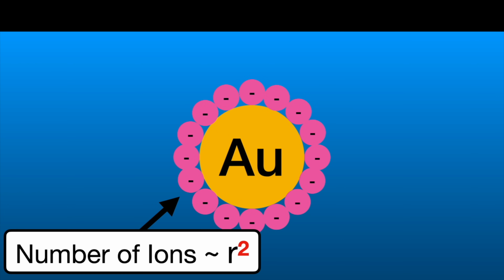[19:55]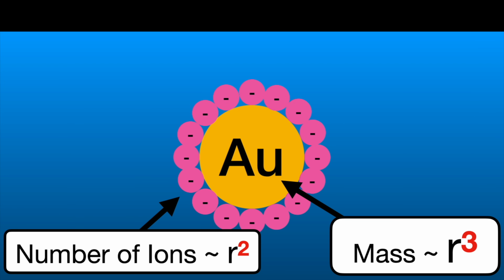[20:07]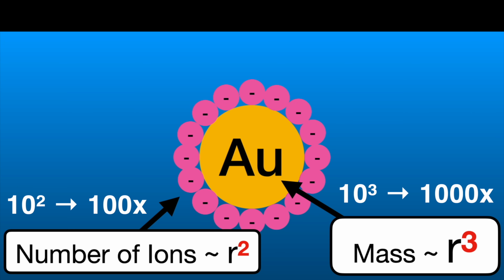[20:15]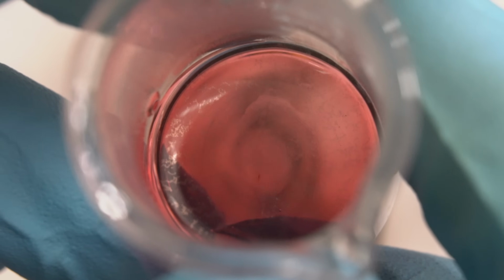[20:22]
The reason for this is because as we increase the particle size, we increase the number of stabilizing ions on the surface by the radius squared. However, as the particle becomes larger, its mass increases as well, making it more likely to fall out of solution. And the mass of the particle increases by the radius cubed. So by making a particle 10 times larger, we've increased the stabilizing factor by 100, but we've also increased the destabilizing factor by 1000. So we're now 10 times less stable than before. This is why the larger particles are falling out of solution.
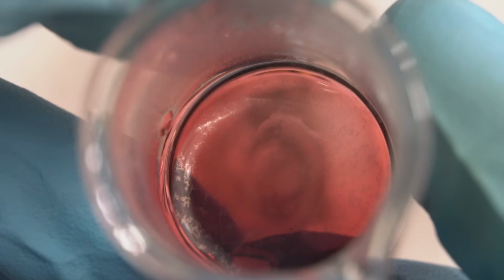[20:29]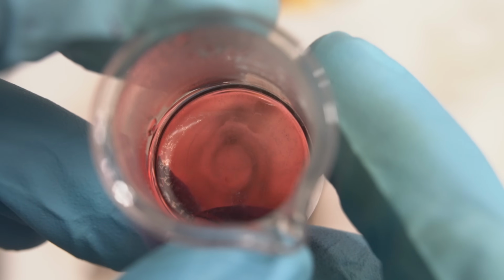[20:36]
In order to make a useful resolution target, the particles have to stay separated, so this method isn't going to work for us. So what do we do now? Well, I spent a while thinking about it, and I realized that I might be able to use this problem of the particles settling out to my advantage.
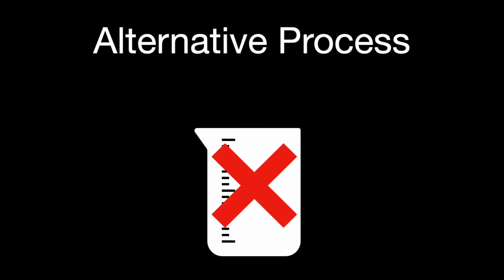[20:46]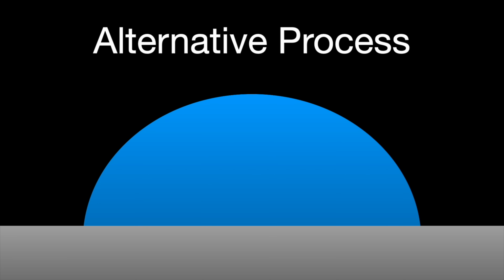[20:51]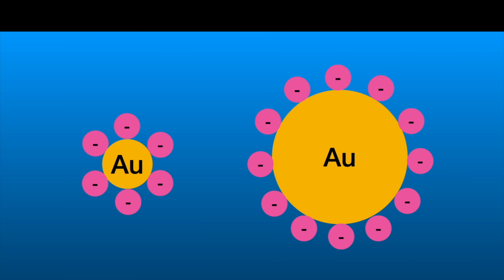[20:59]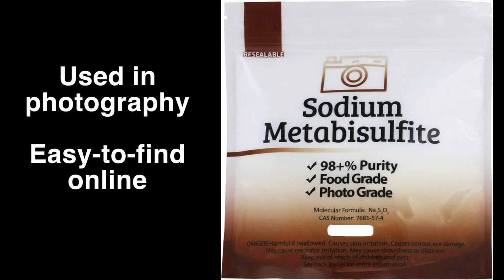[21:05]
Check this out. Let's say instead of making particles in a beaker, we instead mix the chemicals directly on the surface of the chip. In this case, the larger particles will form and settle out onto the surface of the chip exactly where we want them. In addition, because we are no longer relying on the citrate to stabilize the particles in solution, we are free to use a different reducing agent. I actually found that sodium metabisulfite worked well for this.
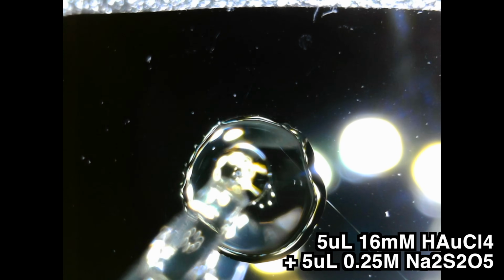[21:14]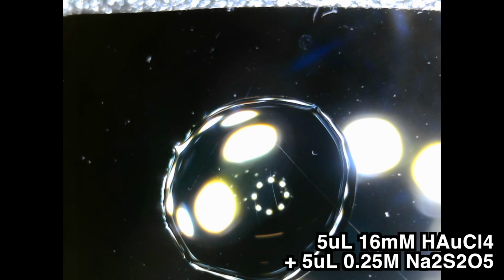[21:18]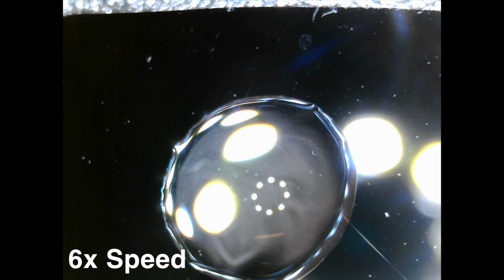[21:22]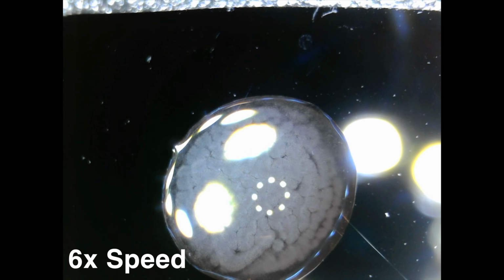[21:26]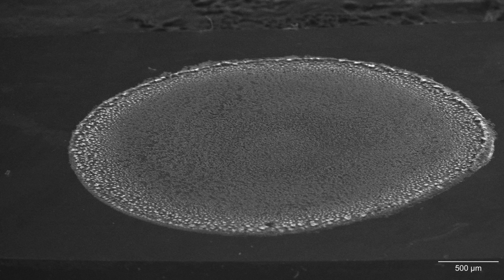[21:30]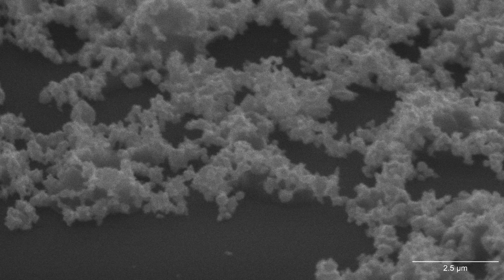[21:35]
I got a new chip and applied about 5 microliters of chloroauric acid. And then to that, I added 5 microliters of the sodium metabisulfite solution. After a few seconds, the drop became cloudy as gold particles began to be produced and settled out onto the surface. I dried the chip and put it into the SEM for imaging. At first, I thought it looked great. But if we zoom in, then you can see that we might have created a new problem.
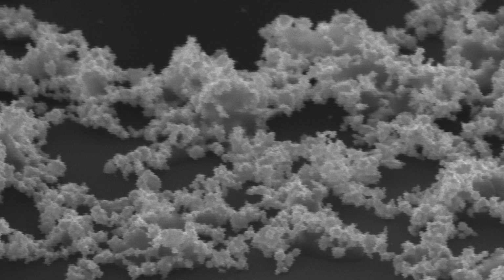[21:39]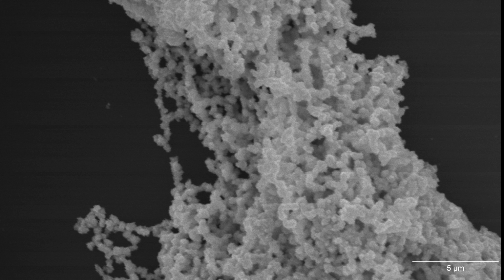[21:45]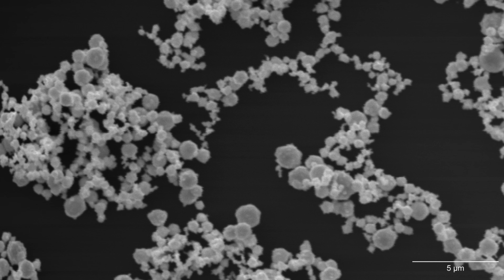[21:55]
These particles range from several hundred nanometers to about 1 micrometer or so, which is great. However, the particles are still aggregating. This makes sense, I guess, since, as we noted earlier, the stabilizing effect of the citrate is less substantial for larger particles. So as they drift downward through the liquid, the larger particles are more likely to coalesce into clusters.
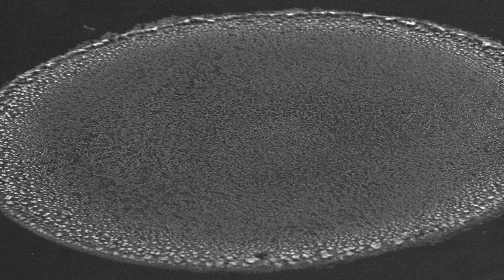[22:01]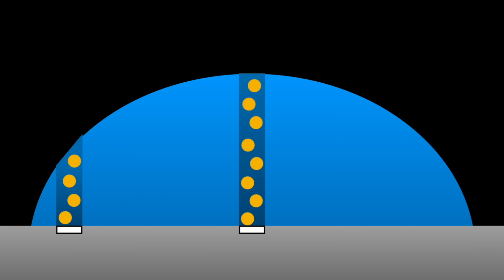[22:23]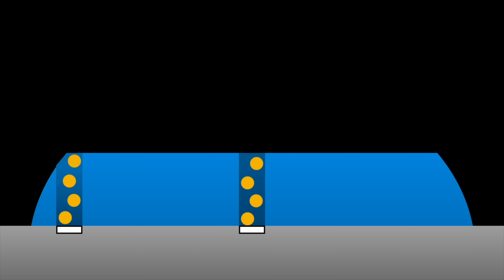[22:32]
However, I noticed something when I moved from the center of the drop to the edges. The gold particles near the edge of the drop were generally more sparse than the center. I suspect that the reason for this is due to the shape of the drop. If we consider a surface of the chip, then the column of liquid above the chip is taller in the center of the drop than the edge. This means that there's a larger volume of chemicals and thus a larger number of nanoparticles being produced over that surface. If that's the case, then all we need to do is reshape the drop into something flatter.
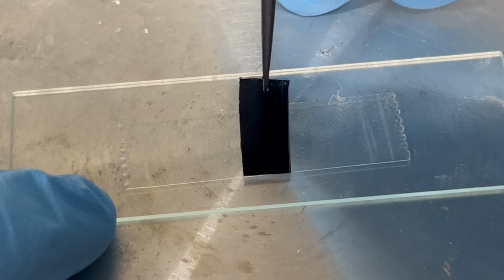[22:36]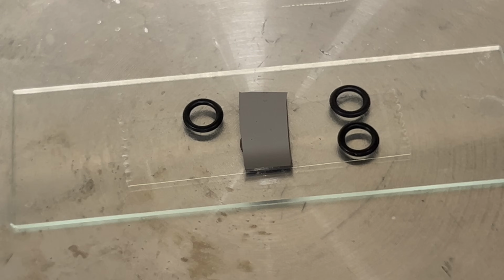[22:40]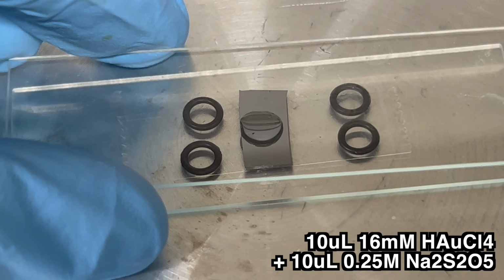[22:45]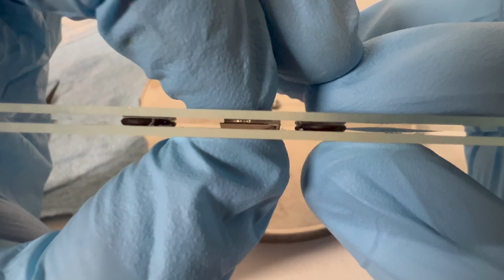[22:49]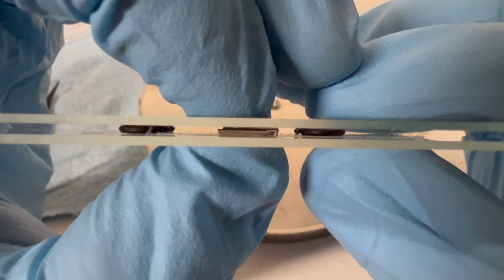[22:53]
I think I have just the thing. I used double-sided tape to affix the chip to a microscope slide, and then used O-rings as spacers. I added the chemicals to the surface of the chip, and then quickly topped it off with another microscope slide. If you look closely from the edge, you can see that the liquid is no longer drop-shaped. It's much more even. Alright, fingers crossed. Let's see what we have.
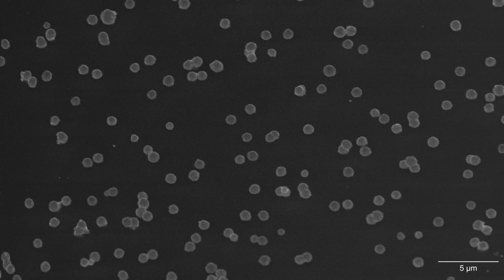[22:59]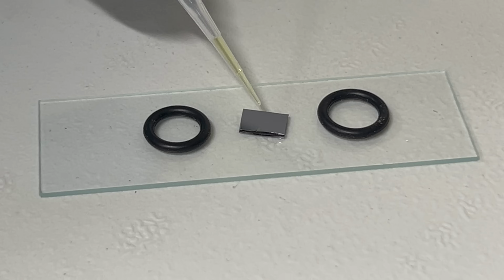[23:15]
Awesome! You can see that we have a large number of well-separated particles, up to about 1 micrometer in size. It looks like this method should definitely cover us for our mid-sized particles. The only thing we need now are larger particles, ideally up to about 10 micrometers. This is the part where I really struggled.
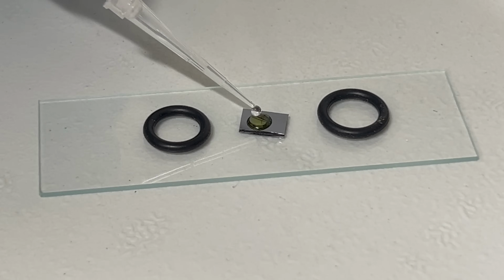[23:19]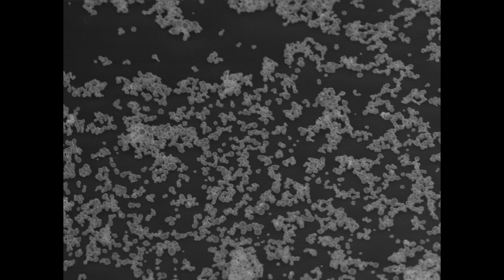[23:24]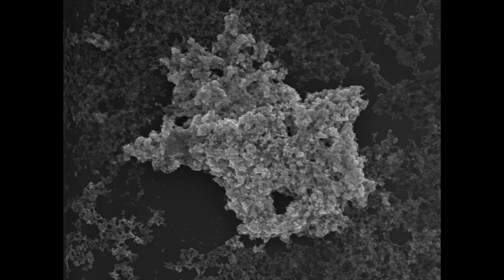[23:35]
I tried over and over again to tweak the variables in order to produce larger gold particles, but it seemed like nothing ever worked. There was this impenetrable wall at 1 micrometer that I just couldn't bust through, no matter what I did. I spent days running test after test after test, and the results didn't really change.
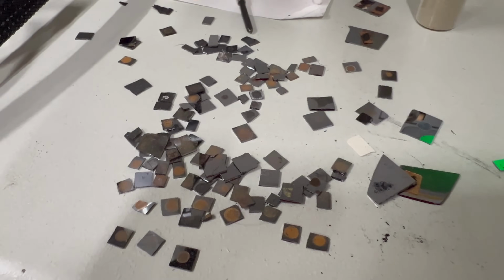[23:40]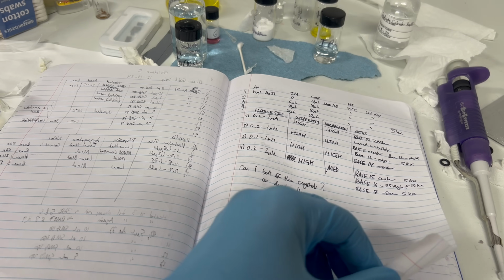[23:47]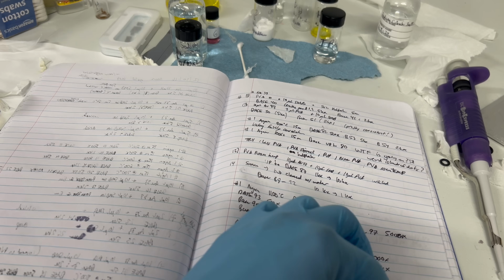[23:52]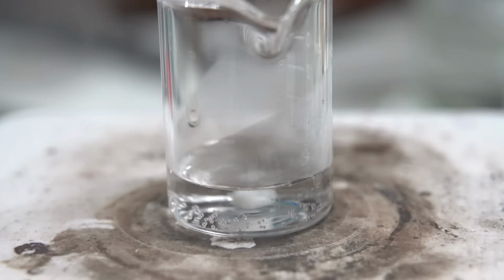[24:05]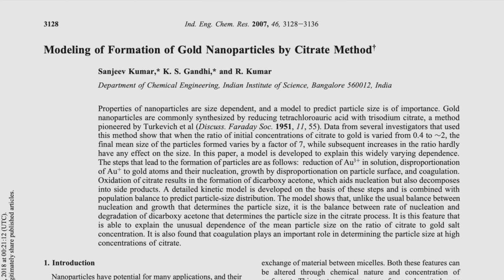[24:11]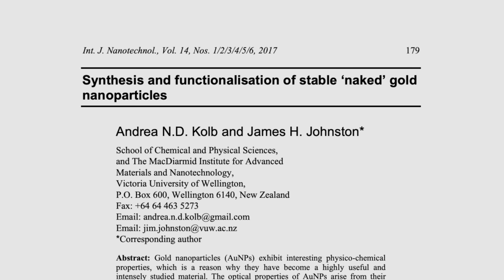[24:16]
After this much failure, I stepped back and thought more about my overall methodology. How was I actually approaching this problem? I realized that I wasn't really being scientific. I was just changing variables at random, expecting to somehow serendipitously discover something useful. But that's not what science is about. Science is about understanding enough of a process to make an educated guess at which variables need to change to produce a desired outcome. I realized that I didn't really understand in depth how these nanoparticles were being formed. So I went on a scientific rampage, reading as many papers as possible on the mechanism of nanoparticle formation.
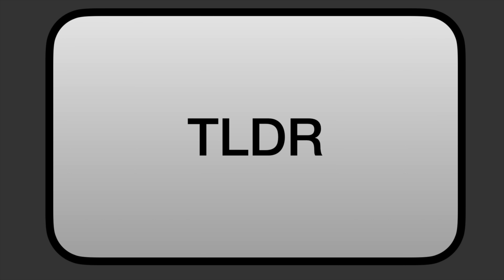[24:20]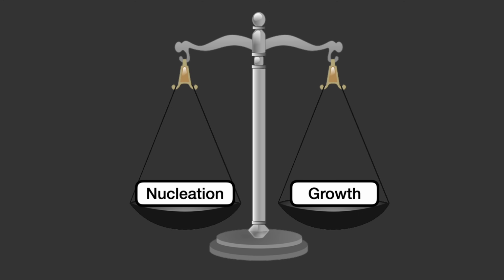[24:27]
And boy, is this topic deep. However, to keep this video brief, I will explain only what is most relevant, and that is the balance between something called nucleation and particle growth.
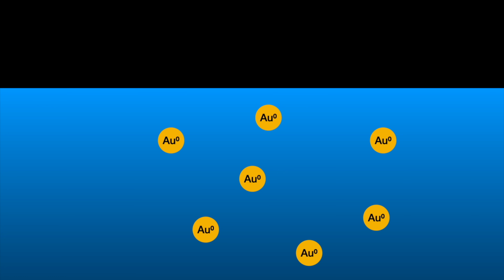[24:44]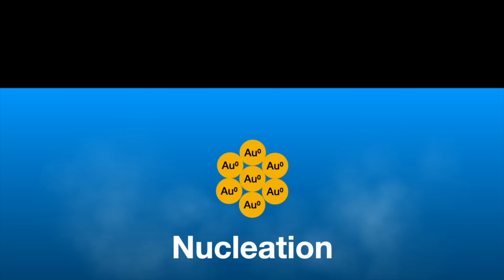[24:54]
At the very instant we add the reducing agent to our gold ions, the gold 3+ ions get reduced to elemental gold. Unlike the gold ions, elemental gold is not soluble, so it doesn't want to be in solution. If the concentration of gold atoms in a particular location is high enough, then several nearby gold atoms will come together to form a new particle. This process of forming new particles is called nucleation.
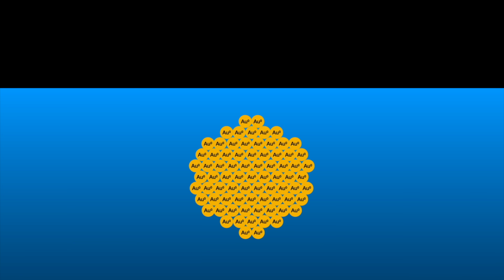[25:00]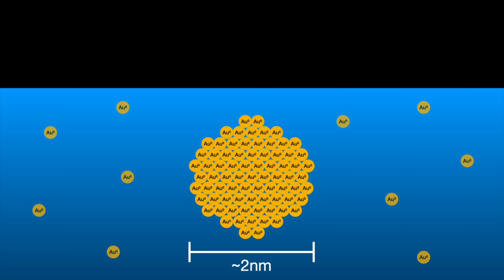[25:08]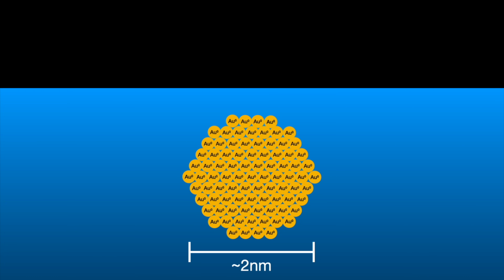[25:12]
I've only shown 7 atoms here for simplicity, but in reality it usually takes about 50 to 100 atoms to form the minimum viable particle, with a diameter of about 2 nanometers. Once this seed particle is created though, individual gold atoms can be added one at a time. This process is known as particle growth.
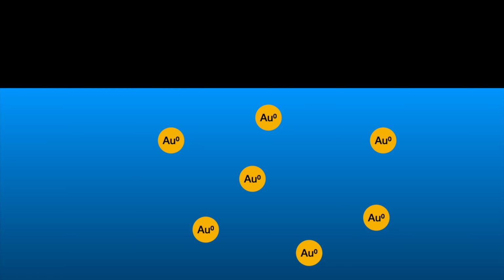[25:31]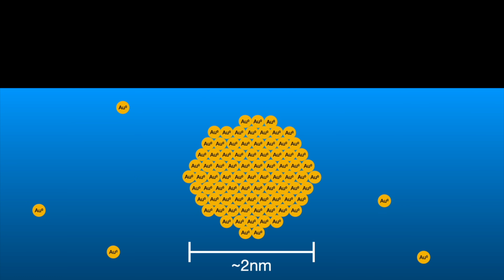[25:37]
It's important to understand that nucleation and growth are 2 entirely different processes, and so it's possible to change the parameters of an experiment to increase or decrease the rate of either nucleation, growth, or both. The big question is this: for any newly created atoms of gold, do they undergo nucleation, forming a new particle, or do they attach themselves to an existing particle and undergo growth?
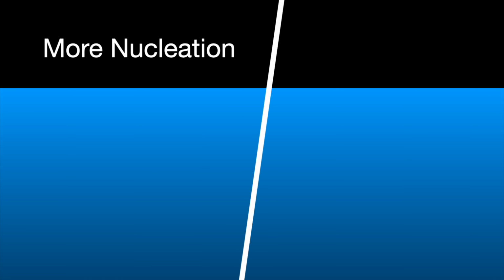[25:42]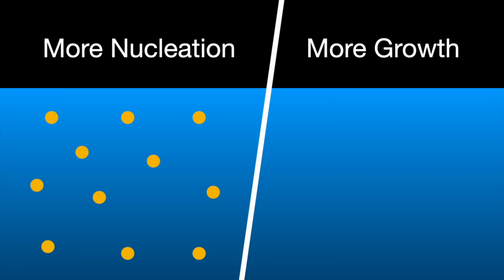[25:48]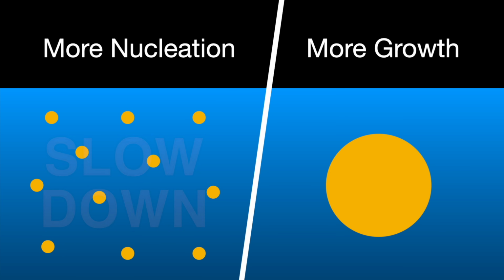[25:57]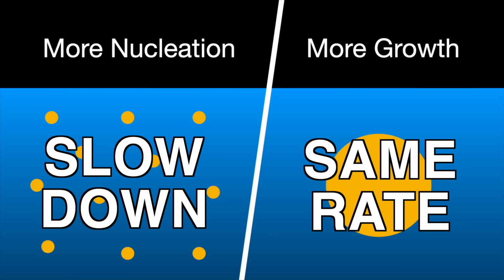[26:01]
If the rate of nucleation is high, then most of the gold will go into forming new particles, and the average particle size will be small. But if the rate of nucleation is low, then most of the gold will go into growing existing particles, and the average particle size will be large. So how then do we slow the rate of nucleation without also slowing the rate of growth?
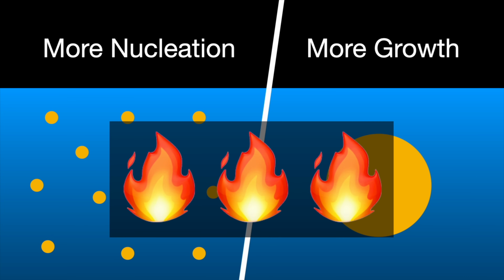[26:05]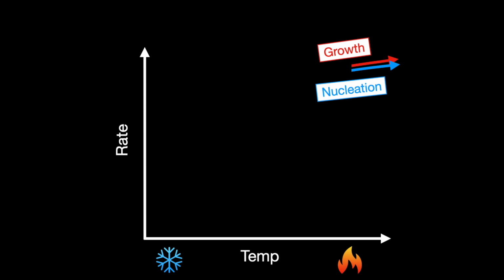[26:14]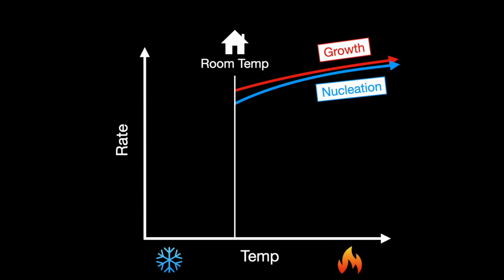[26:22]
Well, it turns out that temperature is the answer. But wait, you say, didn't you already try that? Well, yes, but not in the correct way. You see, the rate of any chemical reaction is dependent on temperature. So decreasing the temperature should decrease both nucleation and growth, which doesn't really change our particle size.
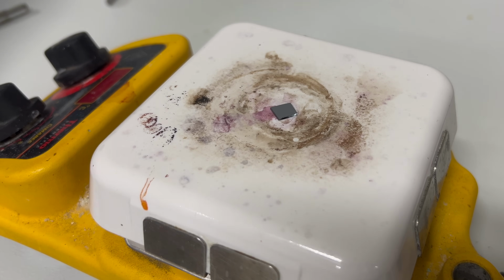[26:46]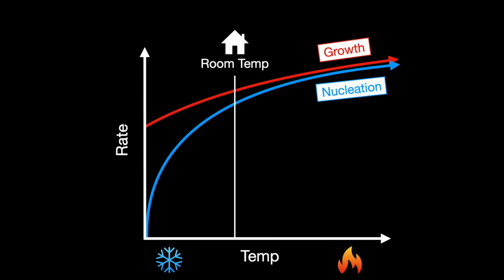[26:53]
However, as the temperature falls closer and closer to the freezing point, the rate of nucleation suddenly drops extremely fast, and growth dominates. This means that if we form nanoparticles close to the freezing temperature, we should have a really good shot at dramatically increasing our particle size. In prior experiments, I had modified the temperature using a hot plate, and so I never ran any experiment below room temperature. So I never got to this section of the graph where the nucleation rate drops so quickly.
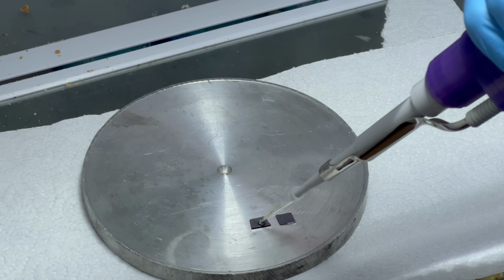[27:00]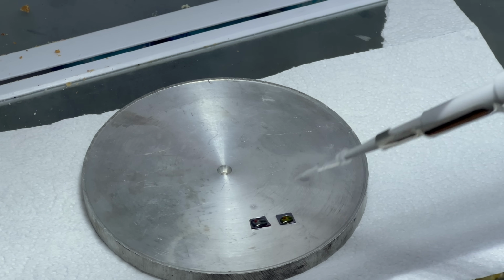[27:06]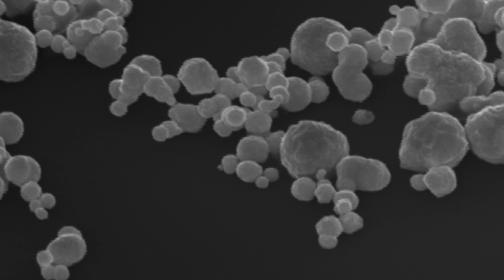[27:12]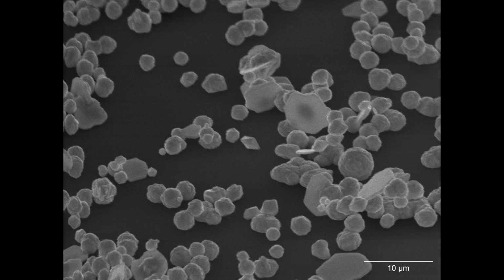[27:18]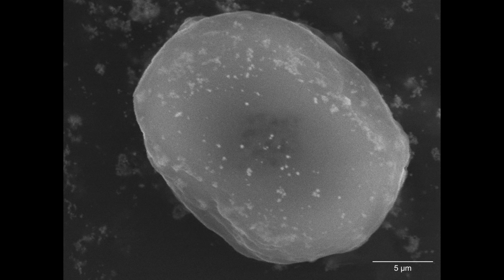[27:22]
So I ran the experiment again, but this time I did it in a cold environment. Now, you should never mix chemical experiments with food storage, so don't actually use a refrigerator like I did. But anyway, what I got was spectacular. The particle size was much larger than before, with average particle sizes in the 1 to 5 micrometer range, with some particles reaching 10 micrometers or even larger.
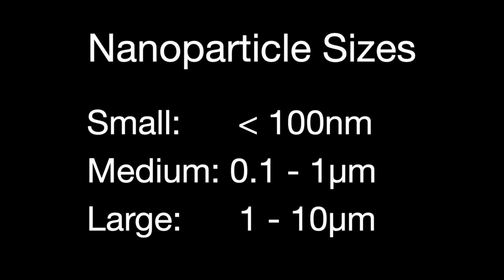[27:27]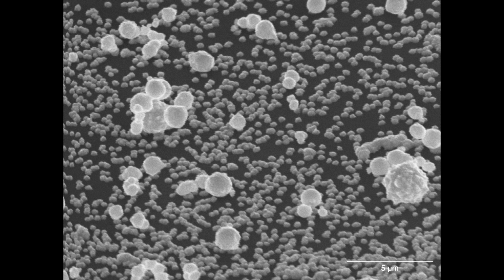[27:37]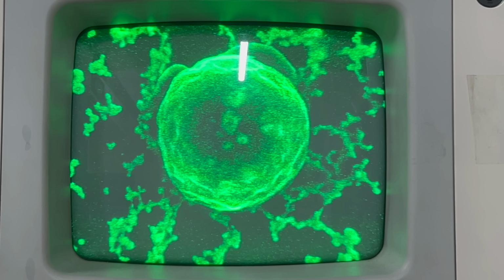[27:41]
Finally, it looks like I now have the means to produce particles in each of the size ranges that I wanted. And all I have to do now is combine my 3 processes into one chip. And here's the fruits of my efforts: a single chip with gold particles of all sizes, from 10 micrometers and above, all the way down to 50 nanometers and below.
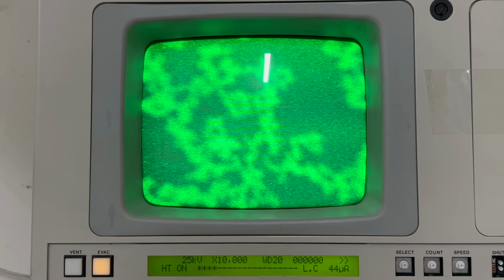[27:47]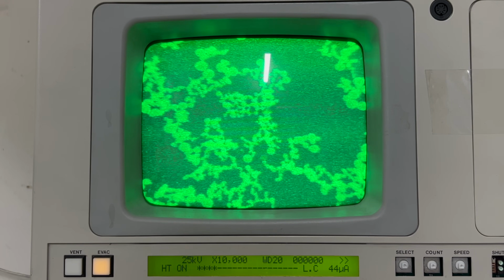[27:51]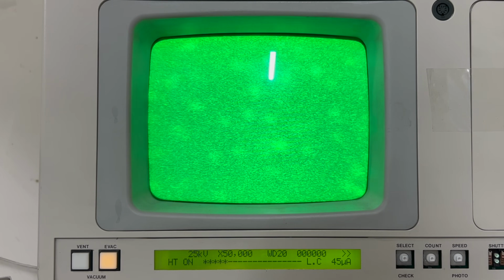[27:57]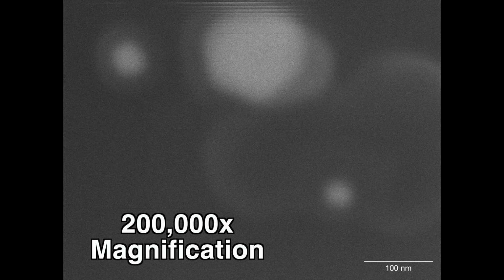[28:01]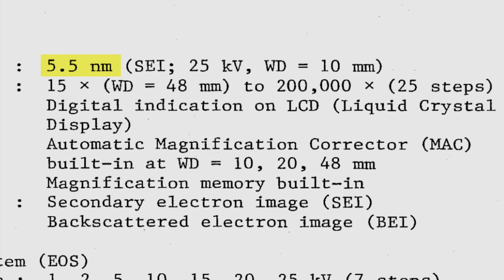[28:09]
I was even able to use the larger particles to calibrate the astigmatism settings on my machine, allowing me to improve the image quality just enough to capture some of the smallest nanoparticles. The particles smaller than 50 nanometers are still a blurry mess, but hopefully with additional debugging efforts, I can hunt down any remaining issues and improve the resolution of the SEM, and get closer to the 5 nanometers that this machine could do back when it was brand new.
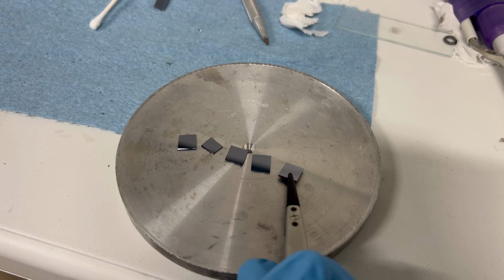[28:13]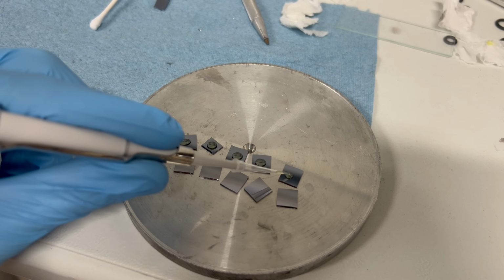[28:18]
In the short term, however, I'm going to follow through with my earlier promise and produce some of these test targets in order to supply them to hobbyist SEM owners.
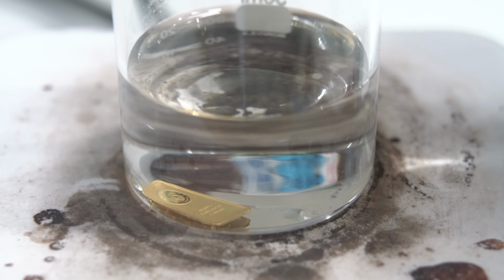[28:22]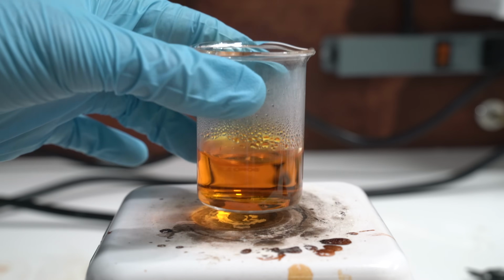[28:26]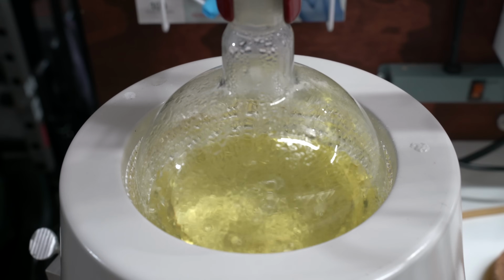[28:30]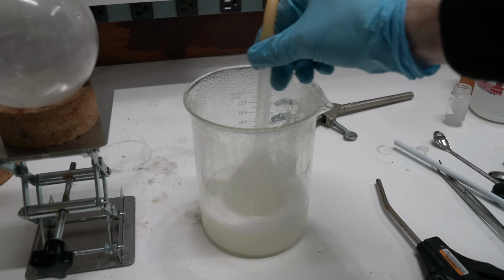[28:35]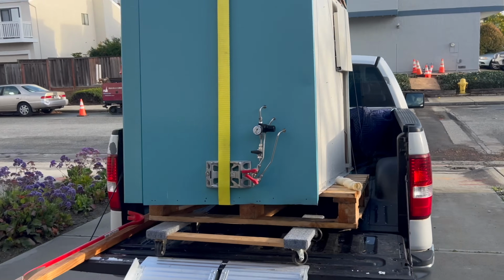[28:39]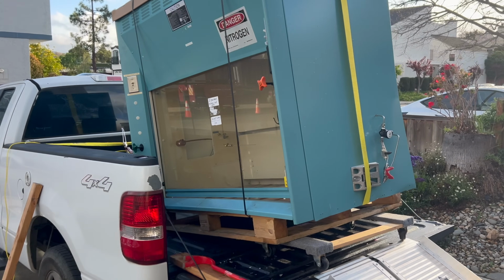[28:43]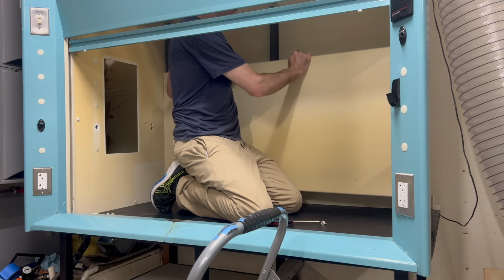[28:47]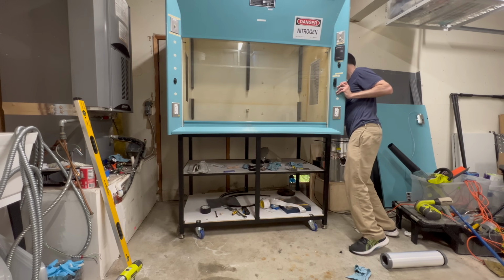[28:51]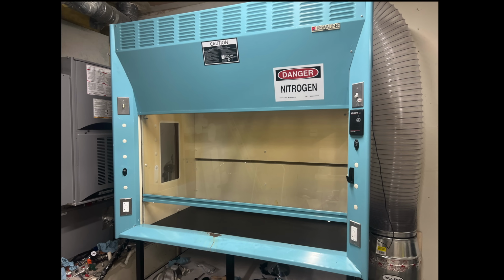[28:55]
I learned a lot doing this project, and one of the biggest things I realized was the importance of proper safety equipment. And so I'm pleased to announce that my next video will feature something that I've been wanting for a long time: a proper fume hood for doing chemistry. I actually have been working on this concurrently with the nanoparticle project, and I'm just about finished with it, so you can expect that video to come fairly soon.